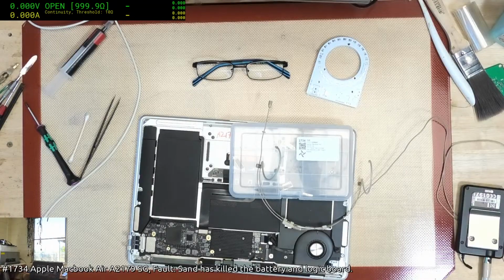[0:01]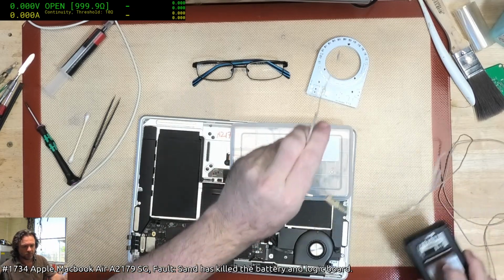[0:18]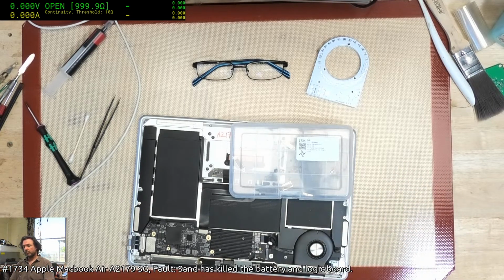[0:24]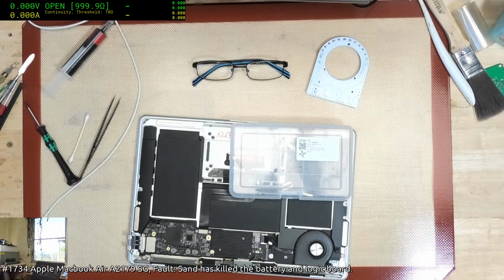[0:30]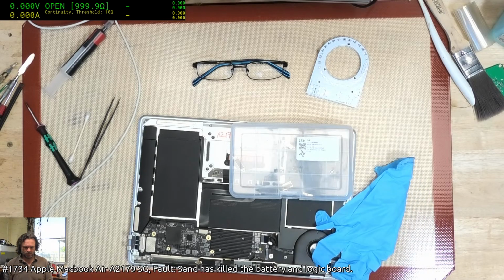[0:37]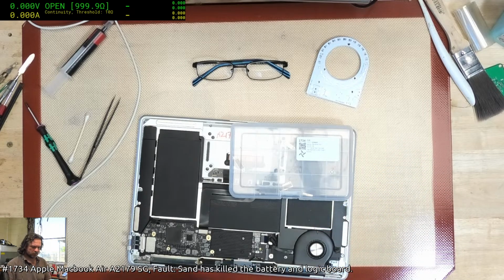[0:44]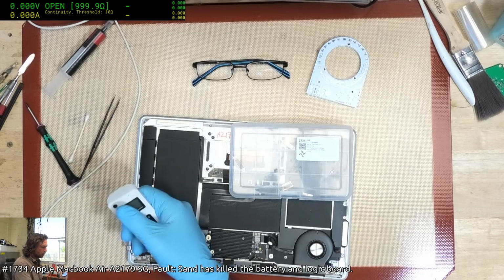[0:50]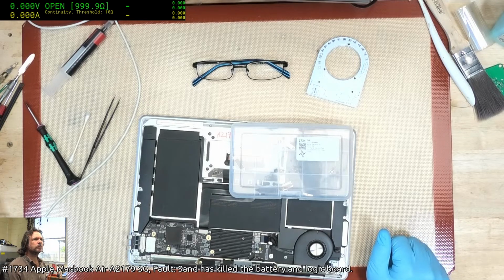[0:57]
gloves.
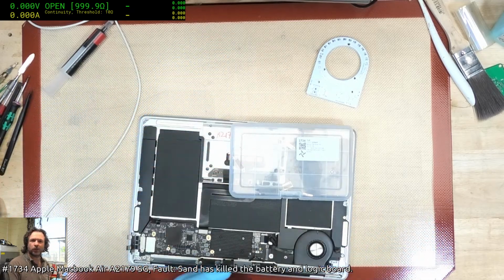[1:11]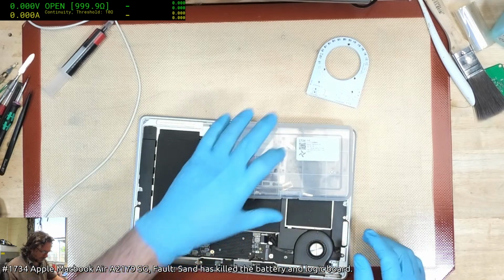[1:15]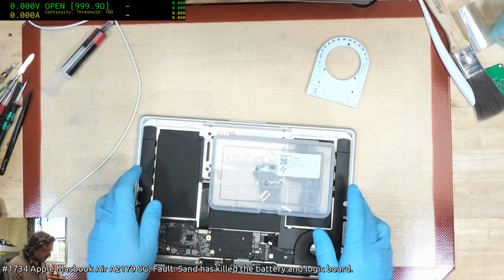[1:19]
Hey there, Christos and Thomas. Alright, let's get this underway since Mr. Rossman clearly has either got his time zones wrong or he doesn't know how to actually turn up on time. Hey Greg, James.
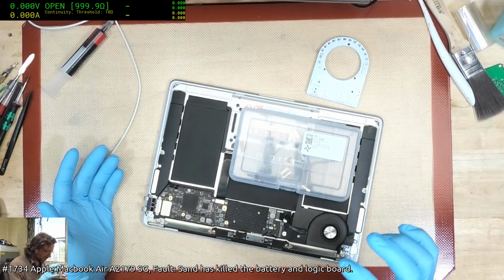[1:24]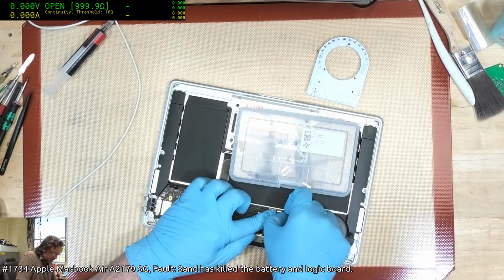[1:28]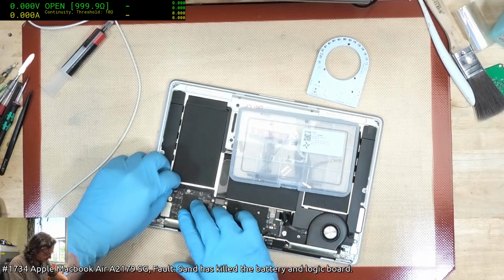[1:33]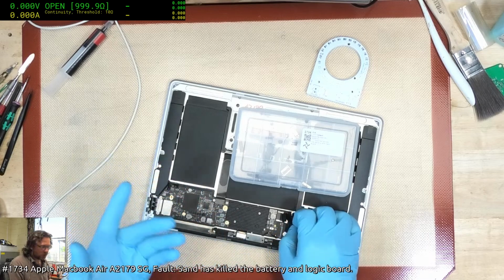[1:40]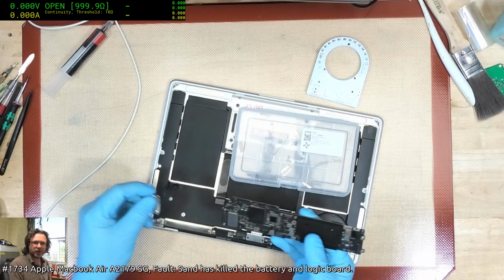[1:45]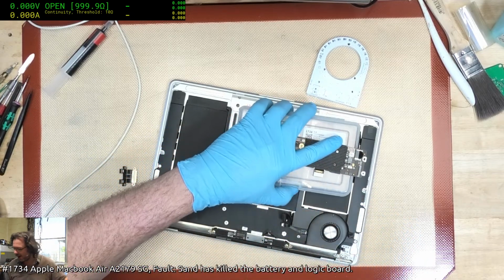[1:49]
By the way, I did fix up this 2179 from last night. I went to bed and I realized that 50-60 milliamps was possibly a DFU mode. And sure enough, it was in DFU mode, so I just revived it and it came good. Now you're probably thinking, why the hell didn't I think about that originally? It's because it's a 2179 and most of the time you get that sort of liquid damage on them and stuff like that. They're basically dead.
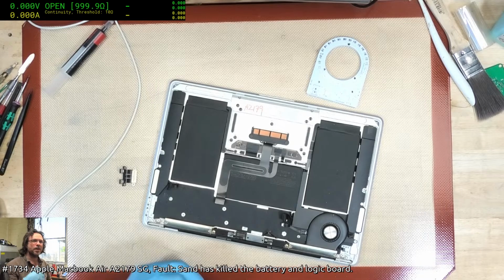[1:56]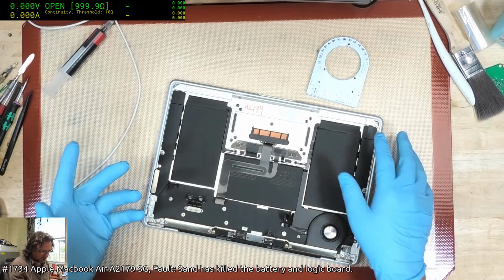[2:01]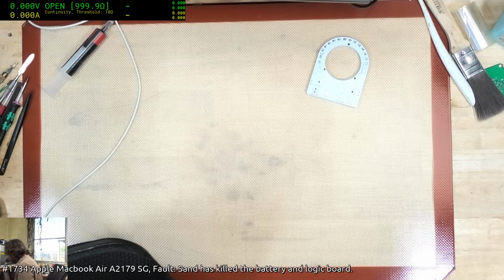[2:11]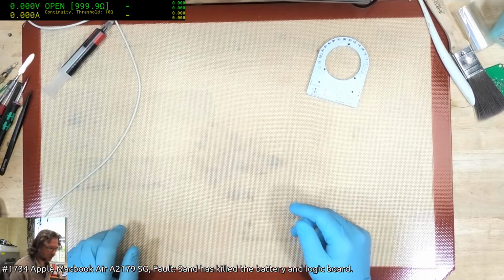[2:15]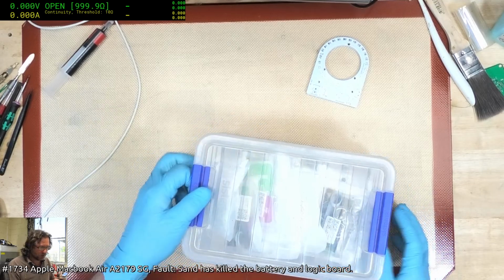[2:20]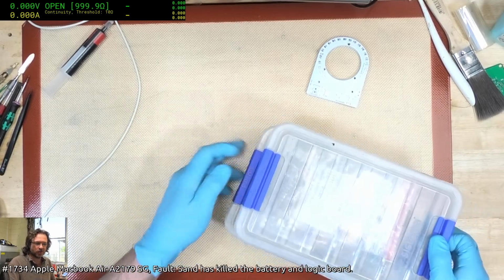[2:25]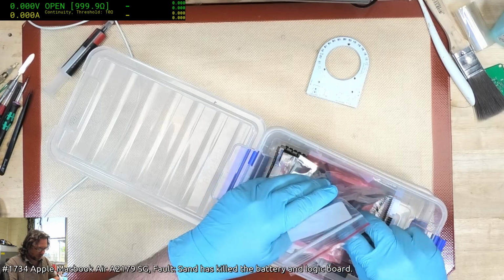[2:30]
So it was just simply due to the high likelihood of deadness that it didn't even occur to me to check the DFU mode. But that would have only worked after I had done the repairs anyway, so the repairs were a necessity, and obviously I suspect that they tried to DFU mode it prior to sending it to me, and that's why it was in that state. So that's why you try not to DFU mode things until it's kind of like your last resort, because it creates issues with the diagnosis and trying to repair.
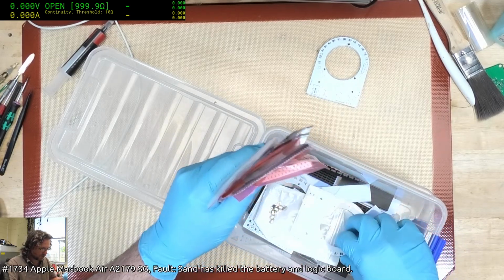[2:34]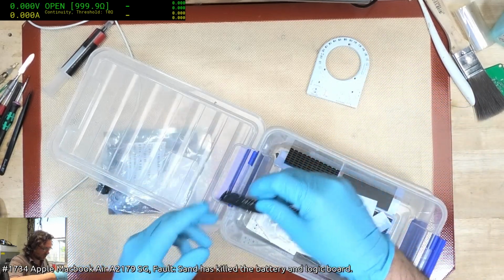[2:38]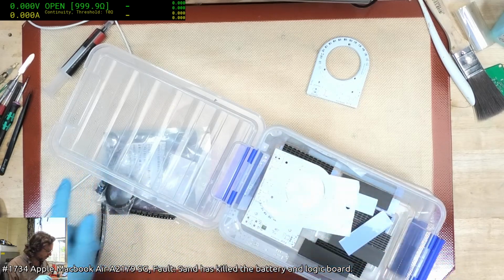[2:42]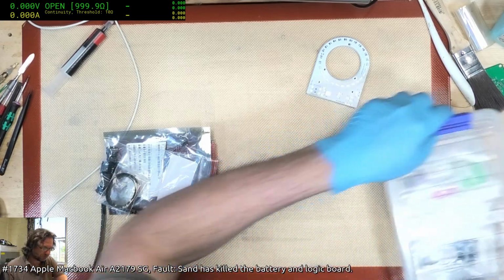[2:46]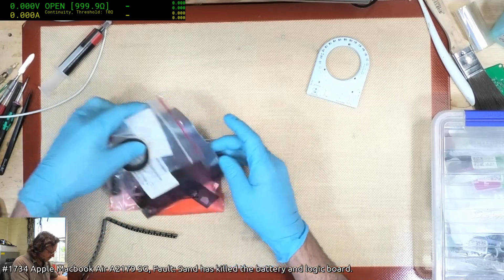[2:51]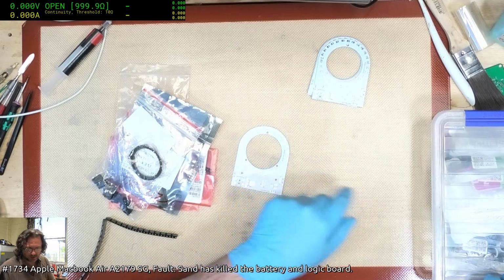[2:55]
Anyway, we have got ourselves a new set of boards, and we're going to make ourselves another ring light, because there are people who want them. And hopefully I can get this relatively well built. The main difference with this one compared to the other ones, let's see, where's the old one?
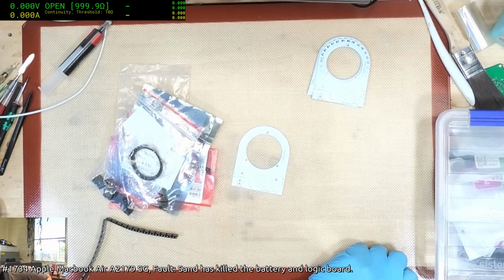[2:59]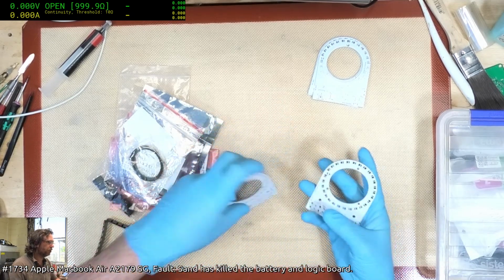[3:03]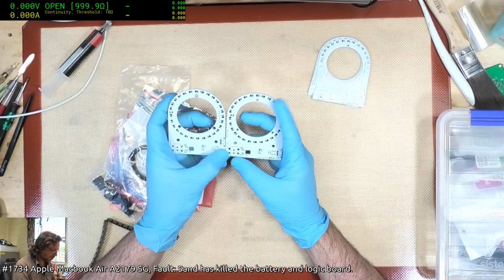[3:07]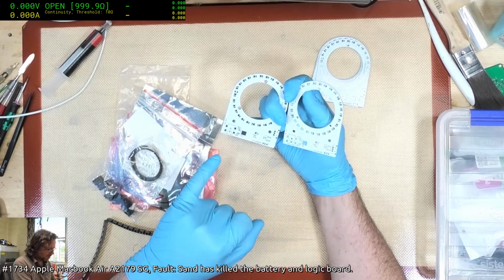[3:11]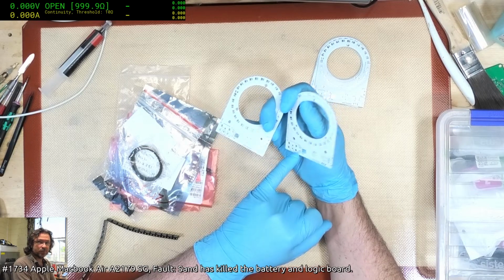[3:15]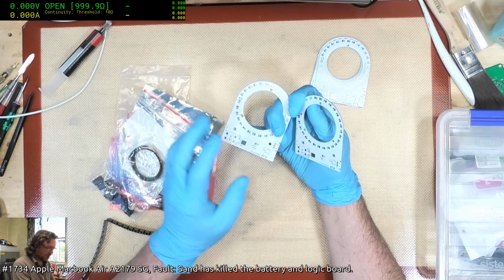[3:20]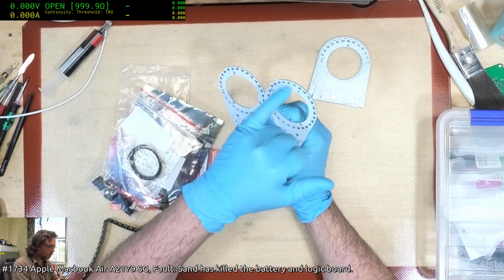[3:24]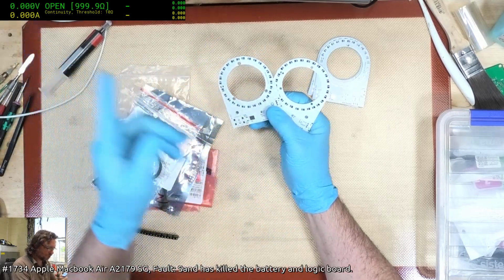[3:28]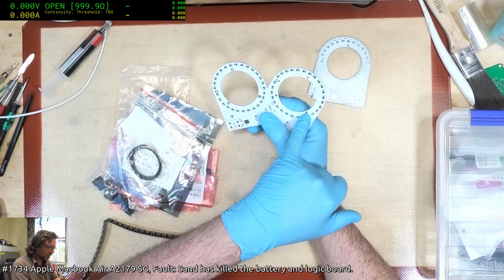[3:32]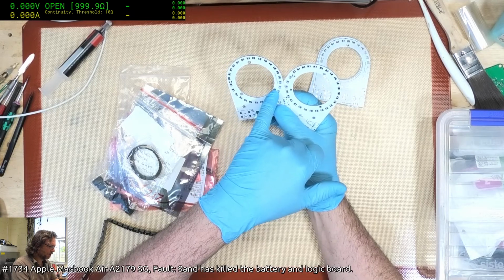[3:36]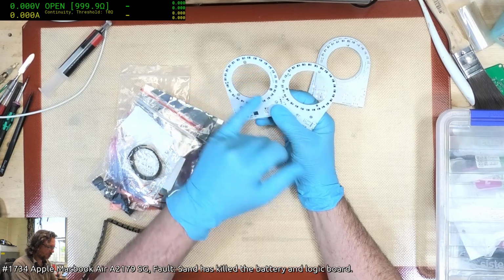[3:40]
Hey Rob, Diatom. Okay, the electrical difference between it is that the new ones, I don't have to have that bridge on the side of the DC jack to make it work. That's fixed up. On a physical side, the mounting holes for the collet or the ring or whatever that we're going to use to attach to the actual microscope itself, they're 2mm here, and I pushed them up to I think it's about 3 or 4mm diameter here, so I don't have a lot of room on the aluminium on the inside, but it's not really a problem.
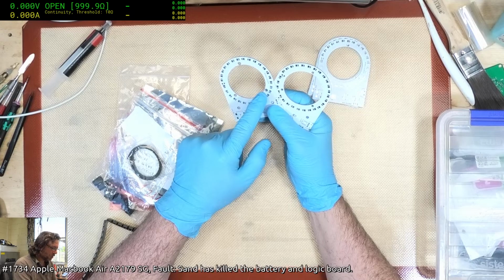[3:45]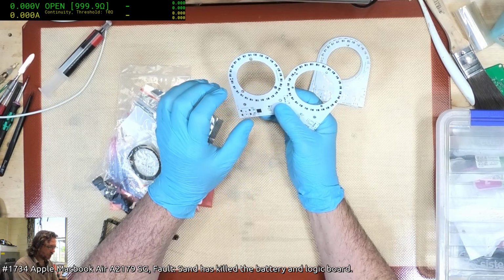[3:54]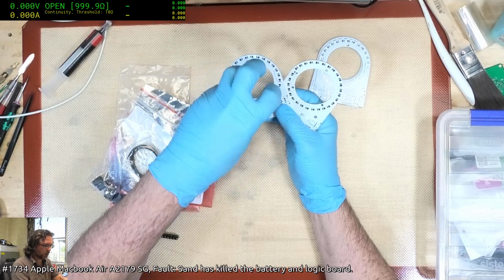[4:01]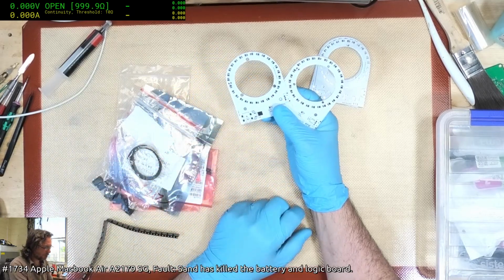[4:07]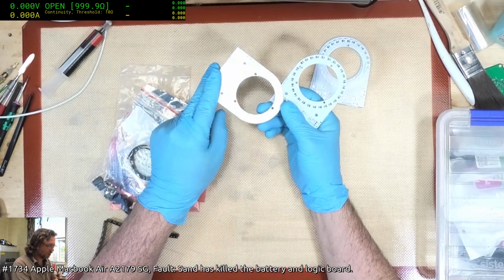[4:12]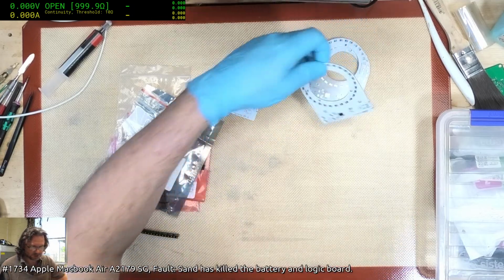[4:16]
I was almost considering to see if I can find some offset or cam screw heads, where the head of the screw is shaped like a cam, and then you can adjust how tight it presses against the microscope Barlow lens just by adjusting it. But it's probably going to be more drama than just getting a 3D printed thing to mount onto there. Anyway, we'll get it built and see how it goes. Ooh, better not mix those up.
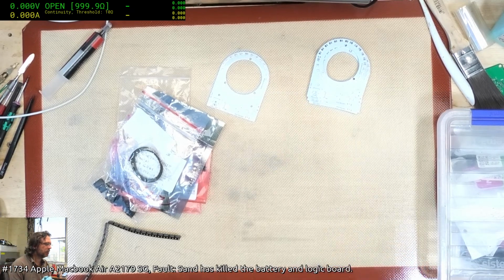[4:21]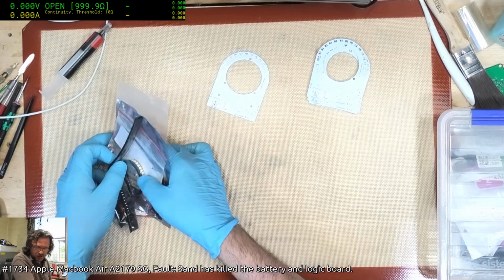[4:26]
Hey, Micromage. Let's see, did I get a...
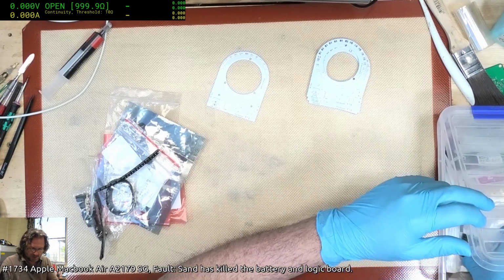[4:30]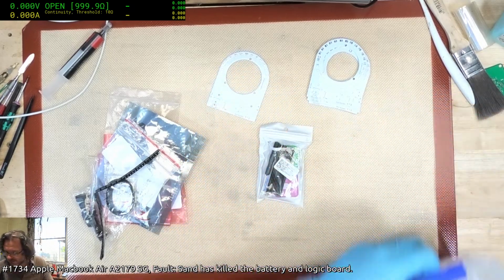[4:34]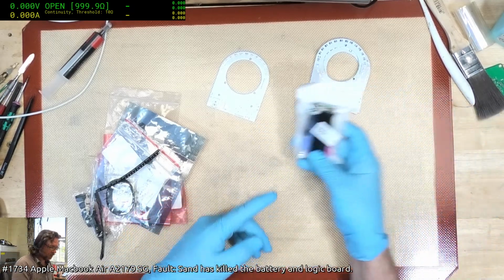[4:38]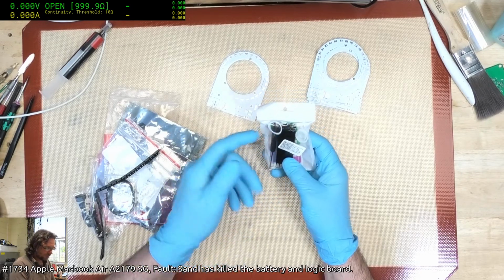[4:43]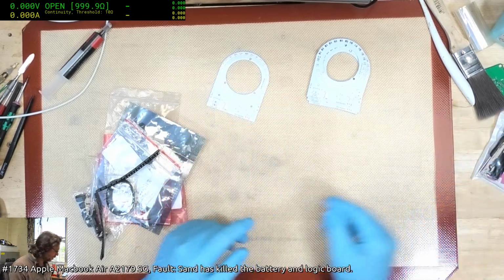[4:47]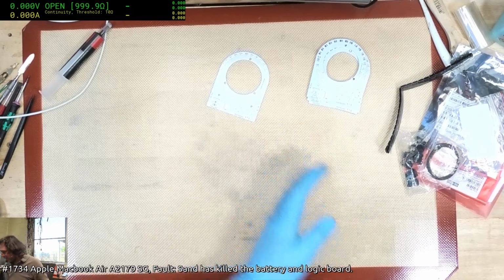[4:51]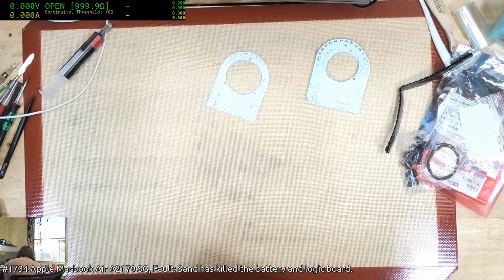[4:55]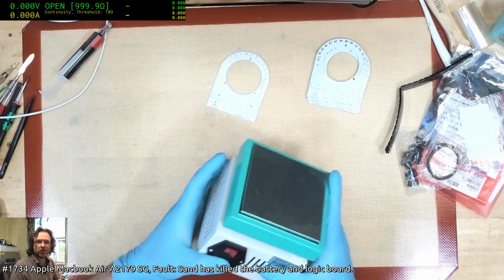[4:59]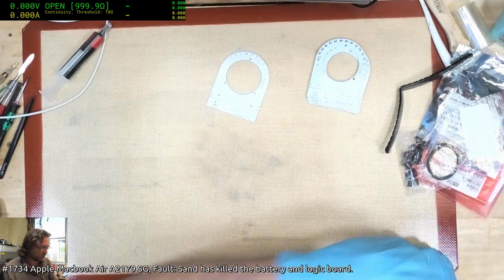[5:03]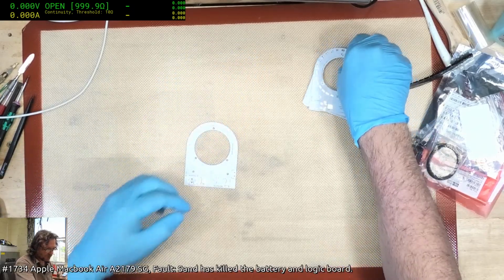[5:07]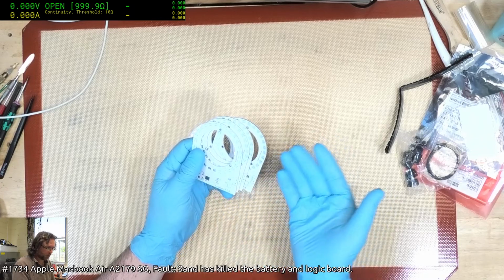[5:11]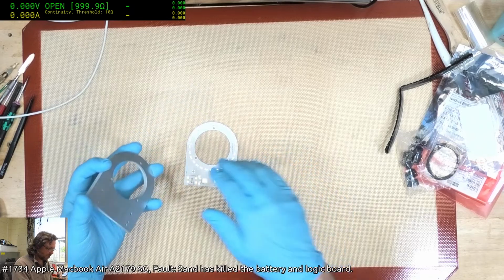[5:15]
And I've also got these bigger heat sinks that I'm using now. They're actually meant for NVMe drives, SSDs, but I've made the width pretty much the same as for the Microscope Light. They work pretty well. Now obviously for this we are going to use a reflow, a very dodgy reflow, but we're going to do it anyway, and then after the reflow we spend just as much time reworking it. That's the only trouble when you do a dodgy reflow system, you've got to do a lot of rework. So let's get to it. I've only got 5 of these. Obviously when I'm prototyping I only buy the minimum number of boards, and then if the prototype proves itself, then you go and buy the couple of hundred.
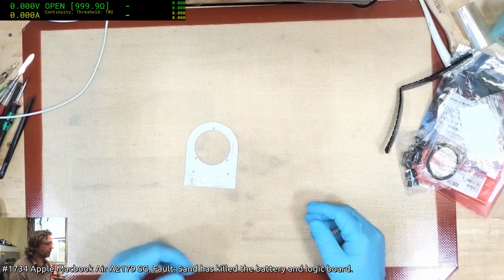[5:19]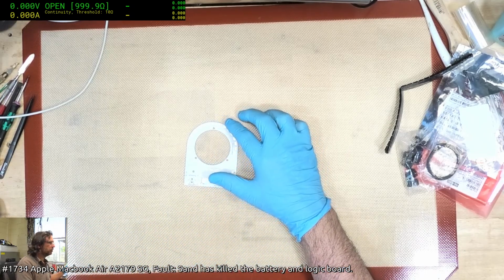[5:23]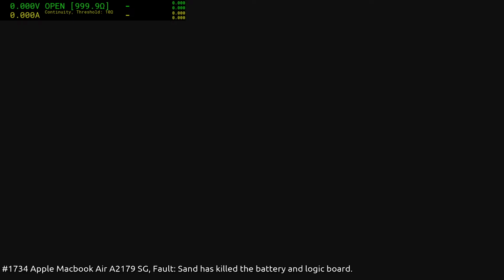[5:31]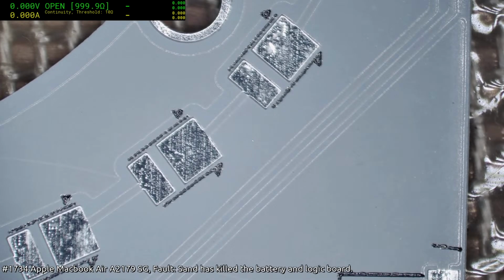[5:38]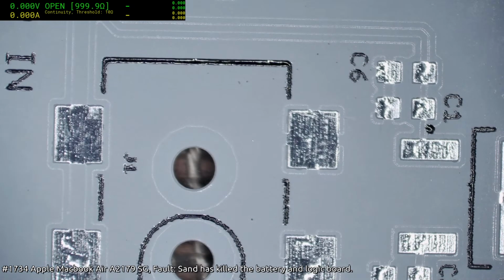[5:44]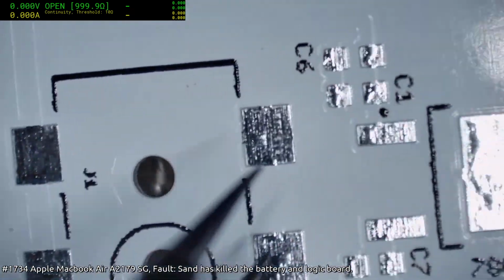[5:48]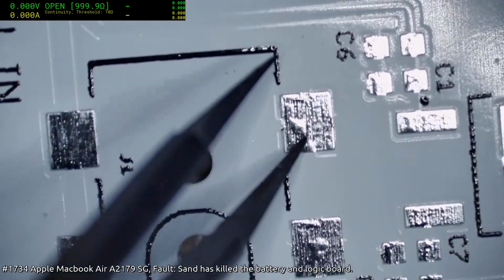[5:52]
Could help if the microscope camera was on. There we go. Alright. So yeah, you can see now that it's probably actually quite hard to see, but you can see the thermals connecting on the edges there, going on both of them.
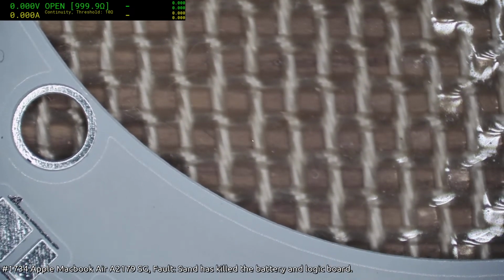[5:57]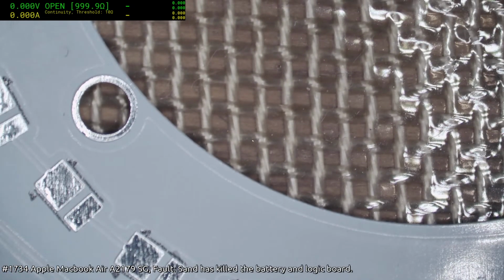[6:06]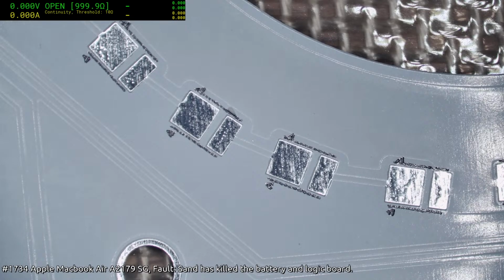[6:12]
Right, so this is going to be a right royal mess because I haven't really invested in a proper applicator. I was considering getting a stencil for this round, but I thought if I do that, I'm sort of cursing myself to make a mistake, and then I'll have to do another board. I mean, I'm starting to get to the point where I'm a little bit sick of getting boards done, as you can well imagine. Okay, I just need to clean out the nozzle. Where's my nozzle cleaner?
So has Lewis's stream actually started yet, or is he just stuffing around still?
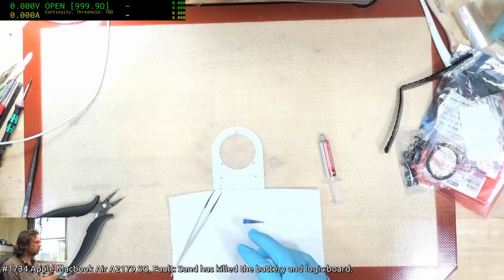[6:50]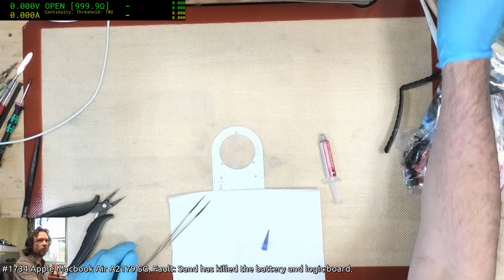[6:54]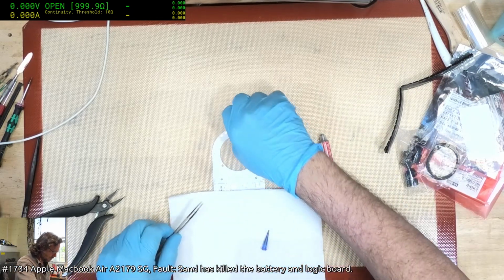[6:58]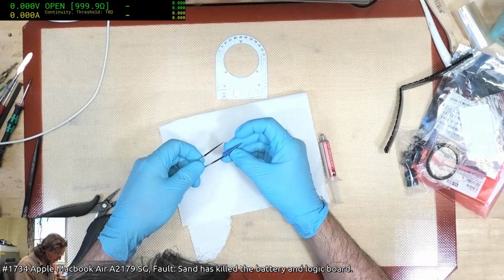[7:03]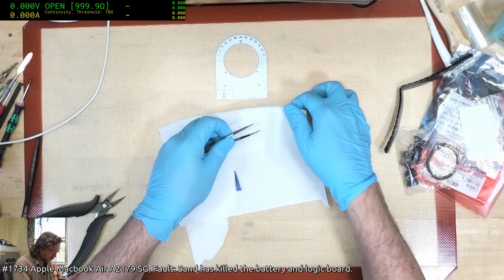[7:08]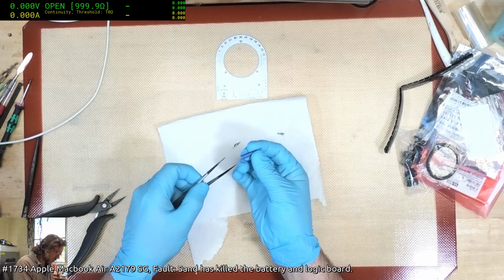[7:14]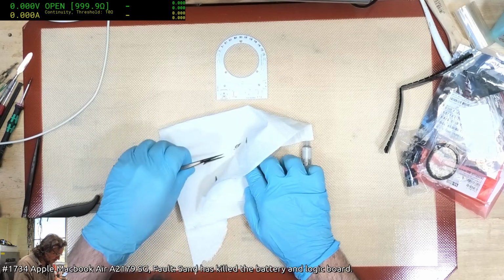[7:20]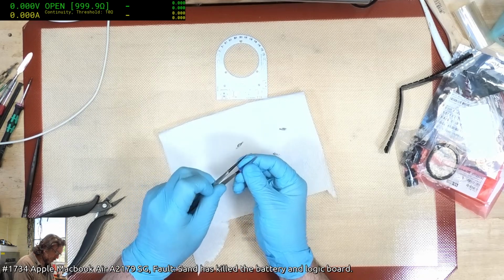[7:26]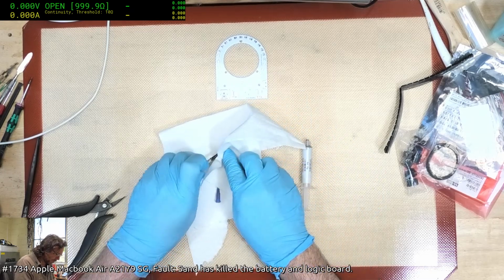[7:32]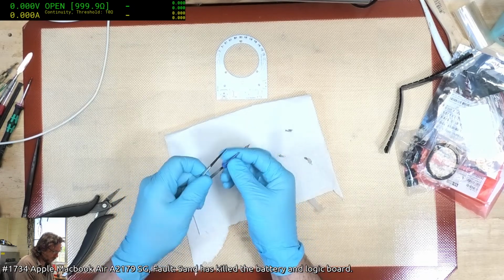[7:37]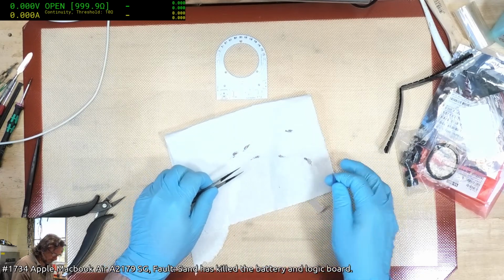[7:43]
Yeah, Micromage, it could be that your light could be brighter than mine. The main thing I want with mine is that it doesn't get in the way of my hot air so much. And of course it's got a high color rendering index. But the actual brightness, I suppose it's subjective, but it's probably not really that much brighter than most of them. But I do much prefer having the superior color rendering and the lack of obstruction getting in my way when I'm trying to move the hot air wand over. Hey there, OT. Hey Paul Glick. Yeah.
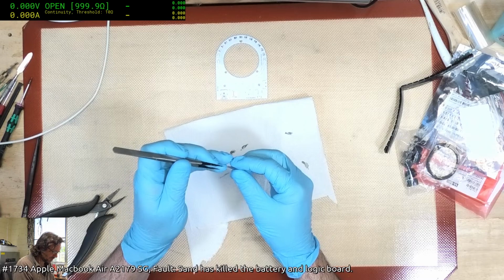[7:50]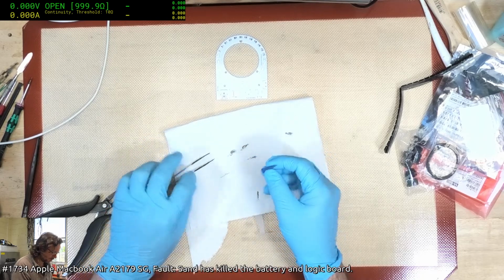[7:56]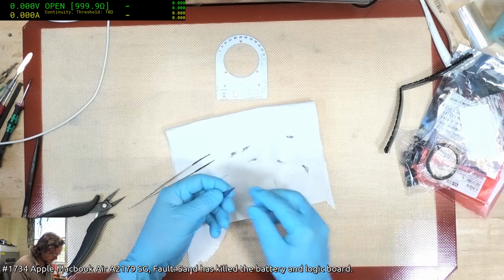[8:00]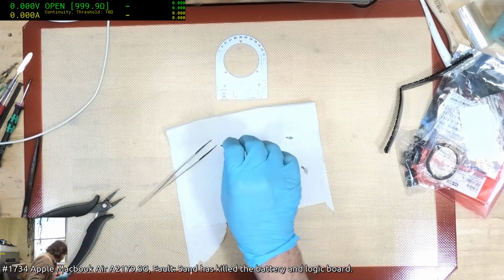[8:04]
I really should just buy myself a couple of hundred of these little things rather than reusing them. It's almost cleared through. Just a little bit more work.
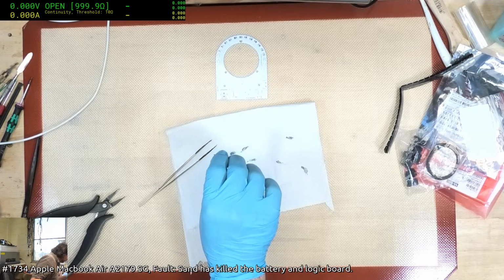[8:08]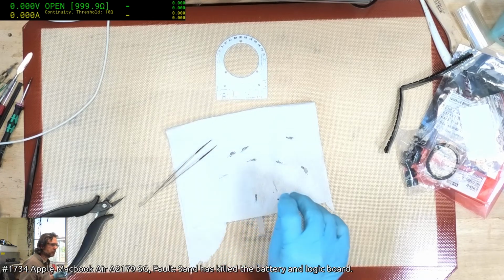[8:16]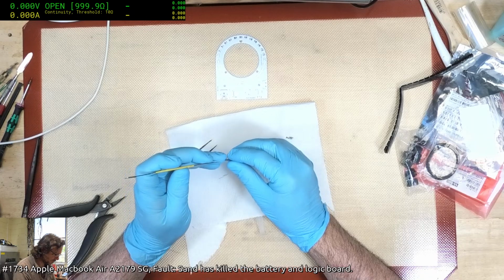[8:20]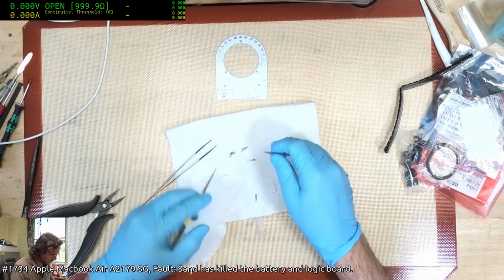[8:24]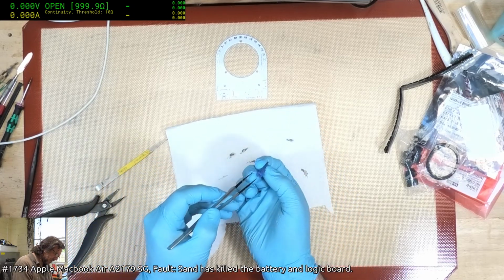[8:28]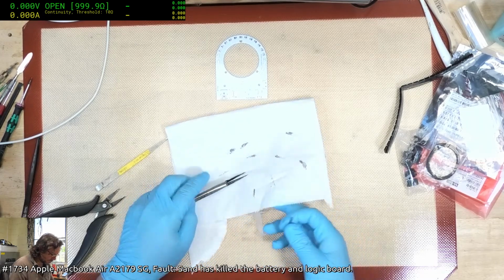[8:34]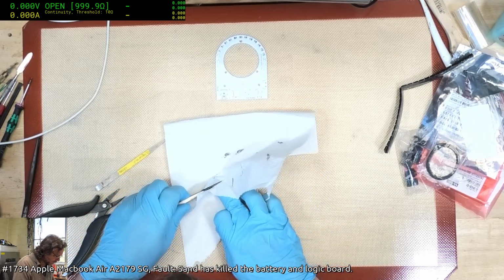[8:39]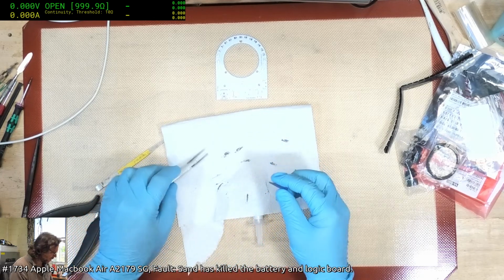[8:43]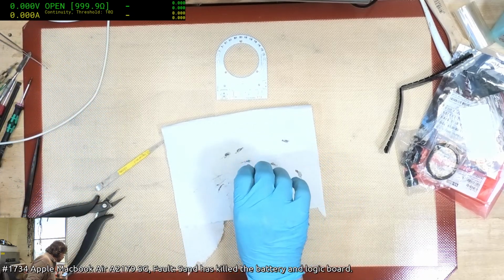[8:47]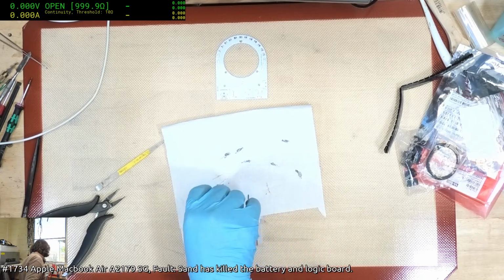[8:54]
Yeah, the glare can be a bit of a problem. It's hard to define what's causing the glare, and I find sometimes if I've got a lot of flux or any sort of reflective stuff on the board, it can appear glary, and the only real way you can solve that is to have even more light and then bring in the polarizer. I'm not sure how a polarizer would go because my LED lights are rotated in different ways, so it may actually be more of a problem than not.
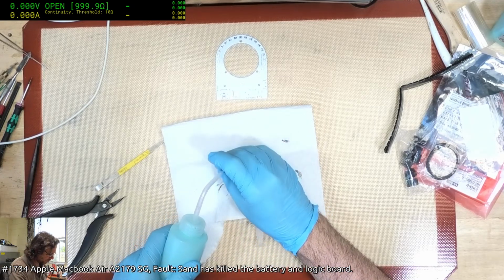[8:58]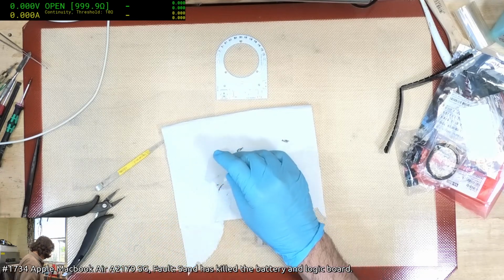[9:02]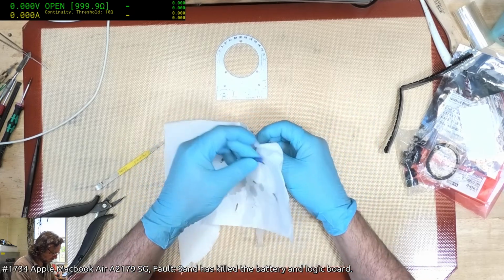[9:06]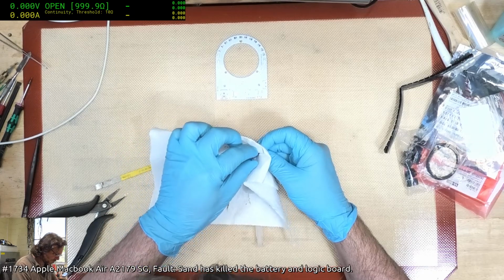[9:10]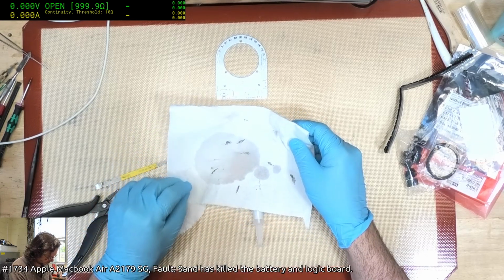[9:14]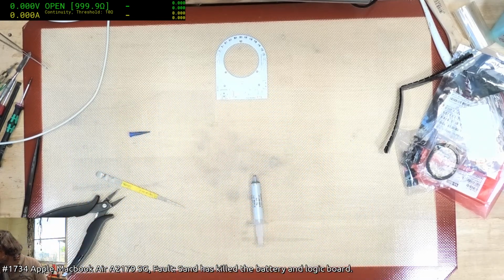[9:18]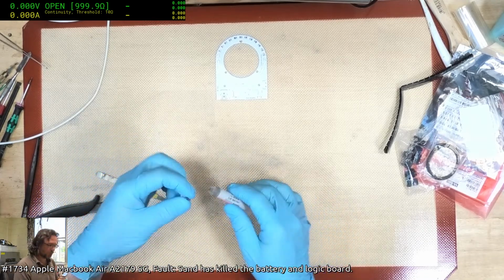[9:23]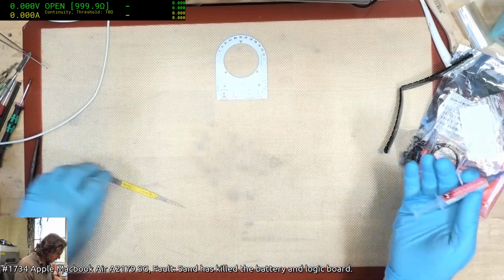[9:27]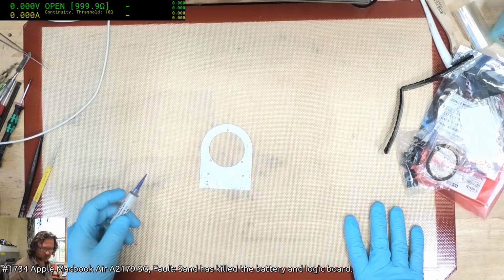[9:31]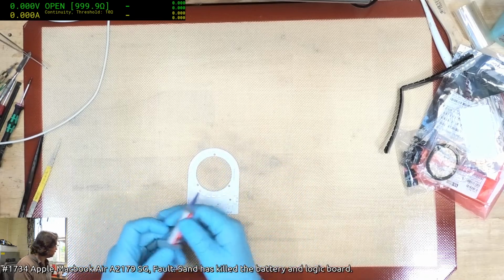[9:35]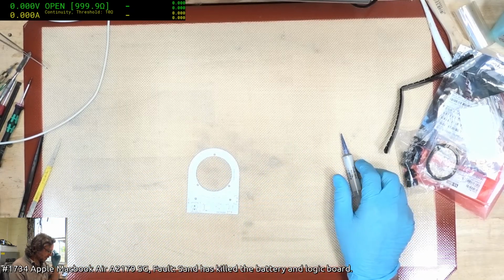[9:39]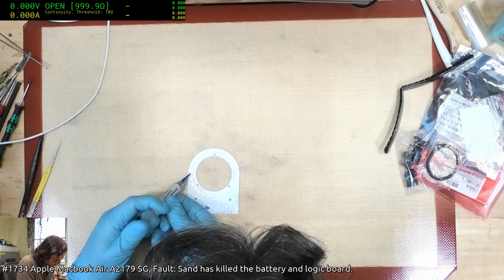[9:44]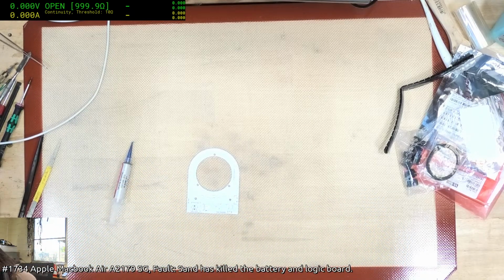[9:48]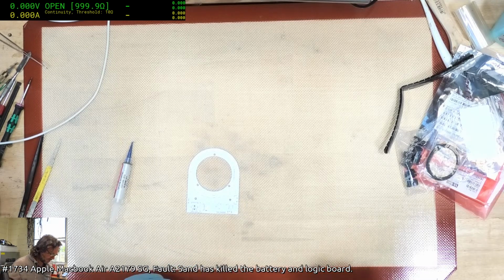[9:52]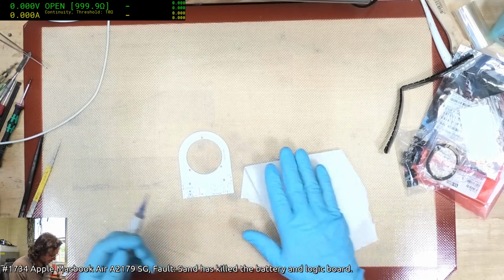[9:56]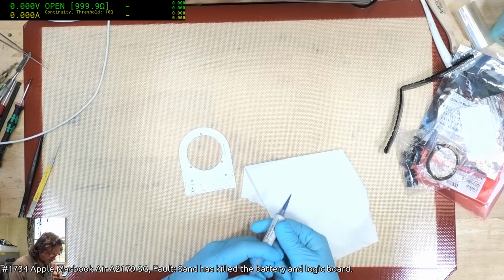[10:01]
Hey Mark Guzman. Alright, this is probably going to have to do. I promise if I start doing these at home I will get a proper stencil. I could cut one myself. I've got the mylar. I usually have done plastic or mylar stencils myself because I've got a cutting machine for them, but it's a bit of a commitment. And I'm not sure how well my mylar cutting system would do; it definitely will not do the controller chip. It will do 603s, that's no problem, but below that it becomes a bit unpredictable.
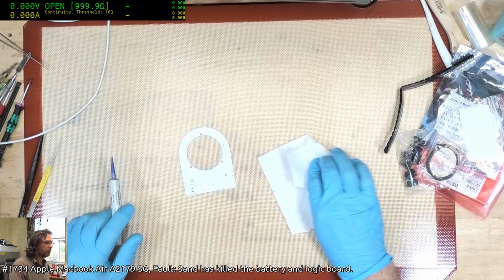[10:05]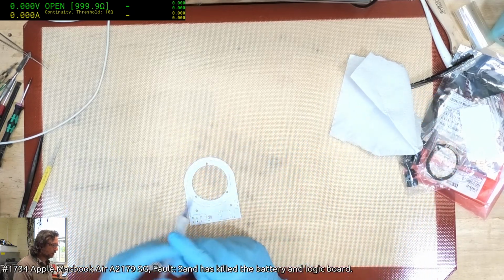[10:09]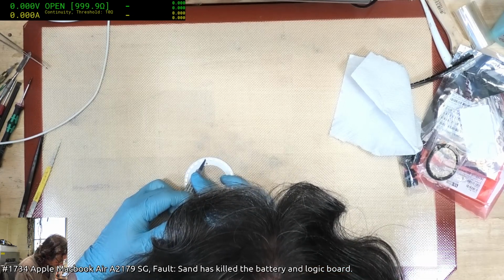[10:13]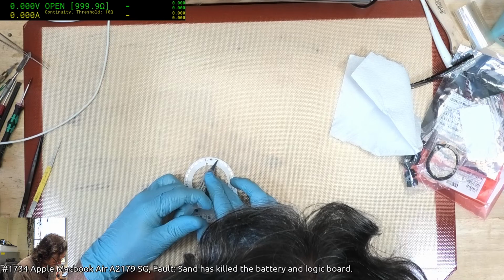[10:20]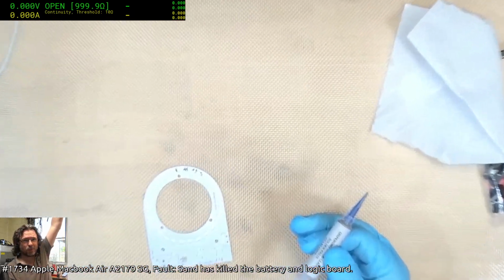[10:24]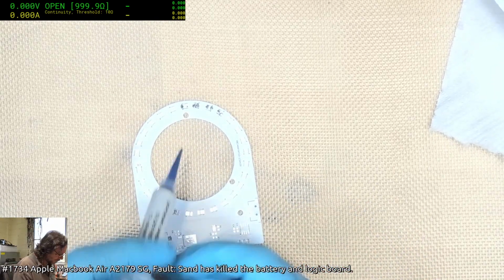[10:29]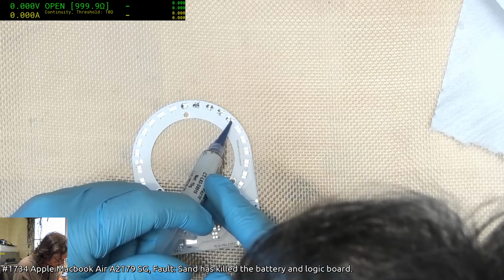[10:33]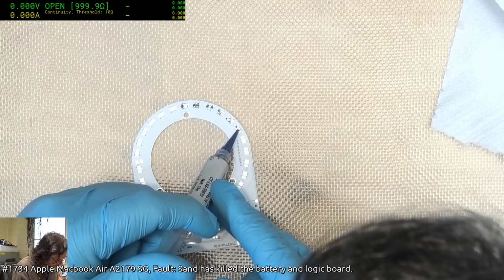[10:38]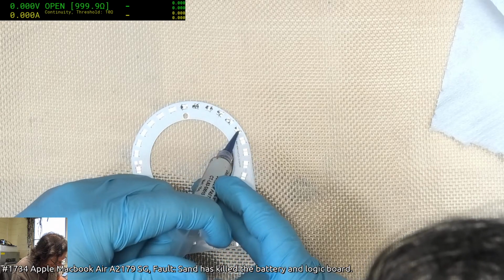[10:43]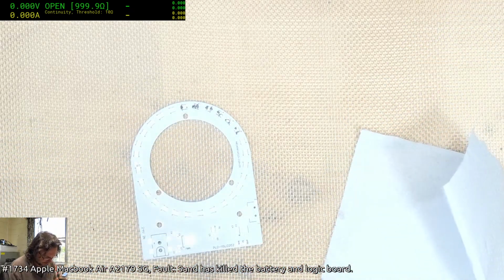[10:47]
Already this is annoying me. Might zoom in so you get a better view of how bad things are. Yeah, I realise it's a little bit overblown. I can't do much about that at the moment. This is a really poor way of doing this stuff, by the way. Now I've got a blockage. Fantastic.
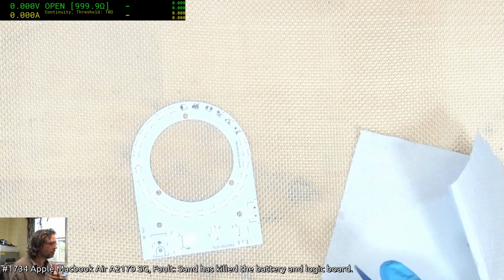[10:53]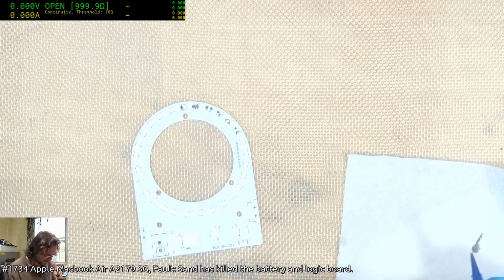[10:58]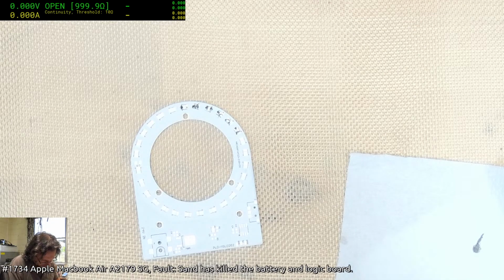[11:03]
Hey, Shard.
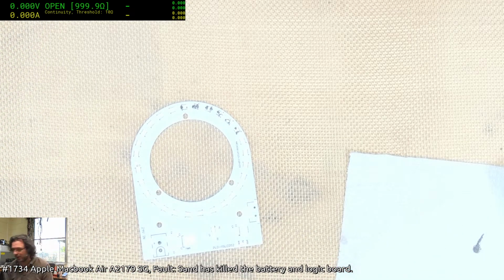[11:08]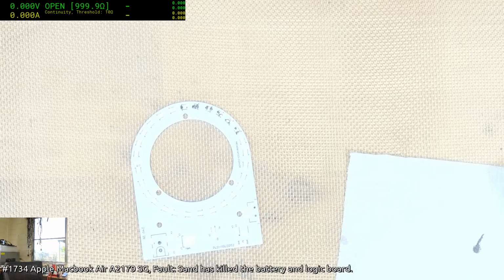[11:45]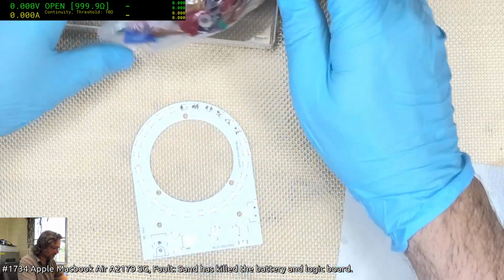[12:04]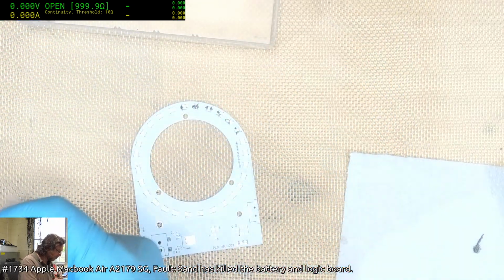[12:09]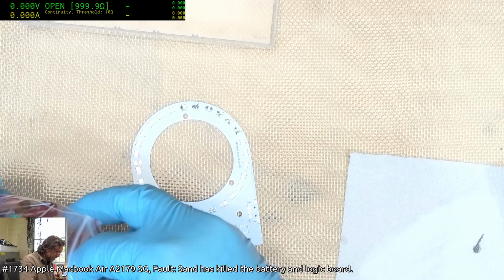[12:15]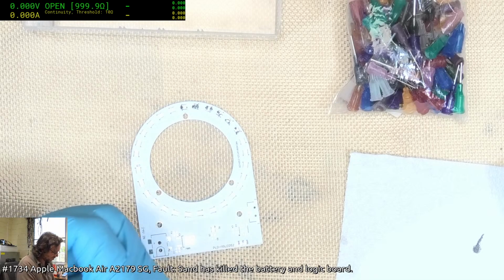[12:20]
That's a full-on, hard blockage. Let's see if I've got another tube. I'm most certain I do, I've just got to find it. Or at least just another nozzle. Now I wonder if my old needle nozzles will actually work. I'm just not sure they're the same screw system. It is lead-tin one, yeah. I'm fairly sure these won't fit, but we'll see. Then again, maybe they will. Oh, there we go.
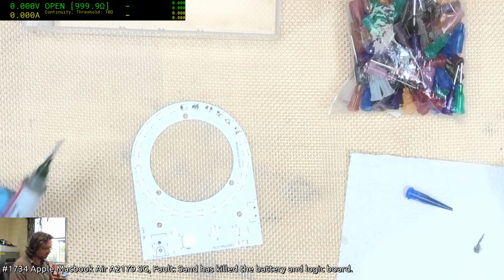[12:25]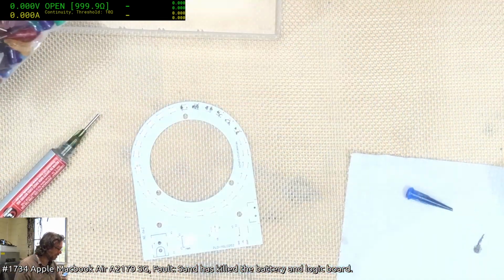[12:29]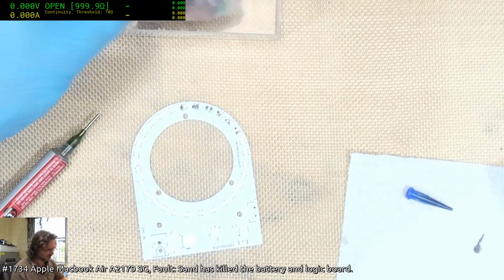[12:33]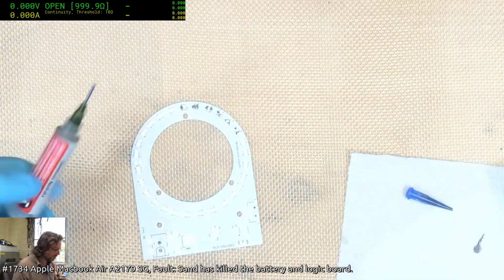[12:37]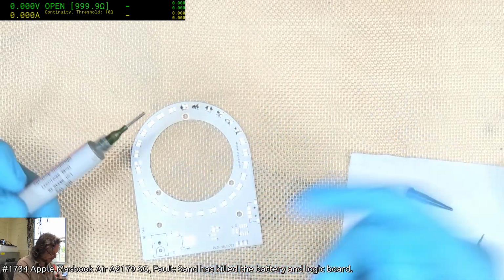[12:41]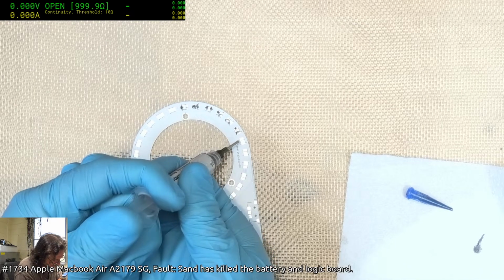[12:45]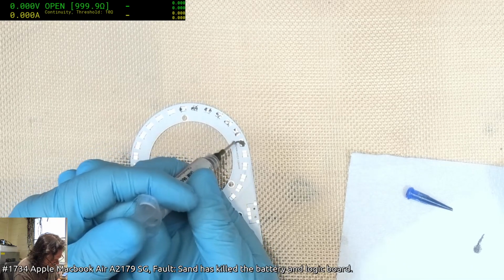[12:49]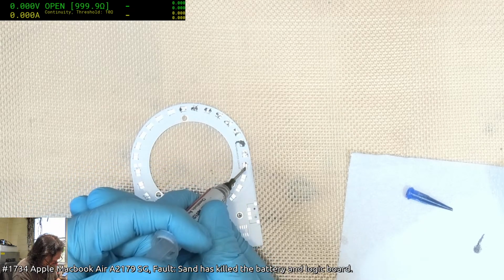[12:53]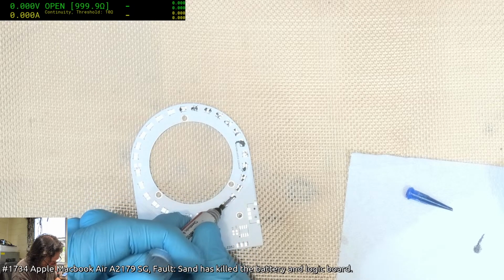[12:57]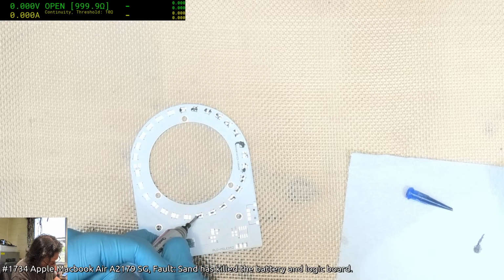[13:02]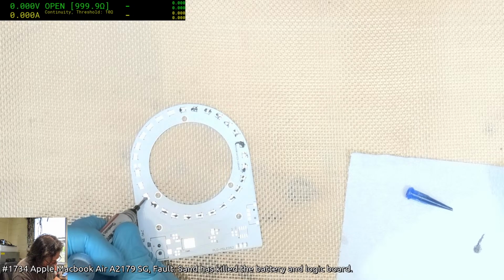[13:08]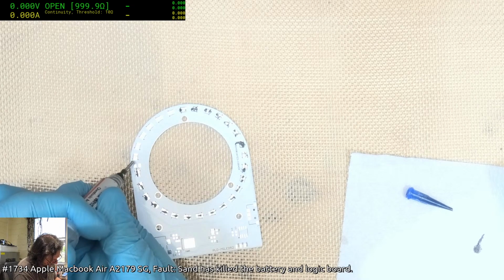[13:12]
Easy pie. Okay, that bag is probably, it's got to be about 15 years old now. I bought these back when I was doing this sort of work normally. Now I've got too much. Okay, learning process. Okay, come on. Too much. Getting there. Kind of easy if I just streak it across, like you're a dog that hasn't got a good diet and you're just trying to clean up afterwards. Do the old drag across the ground.
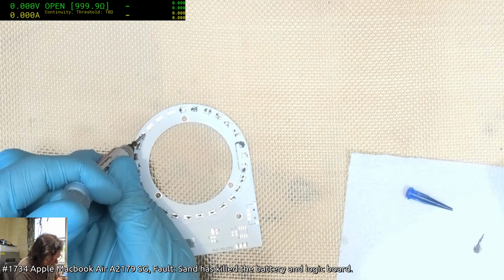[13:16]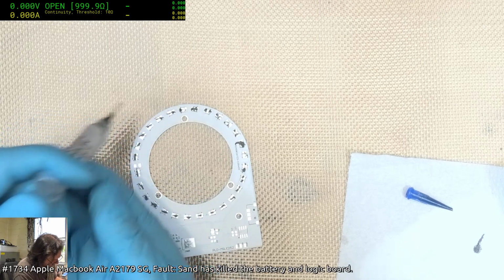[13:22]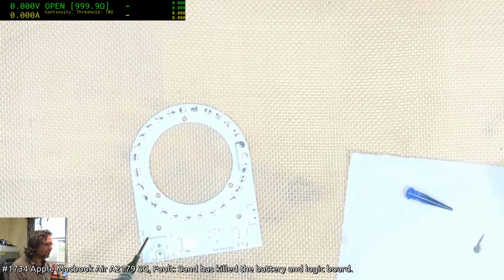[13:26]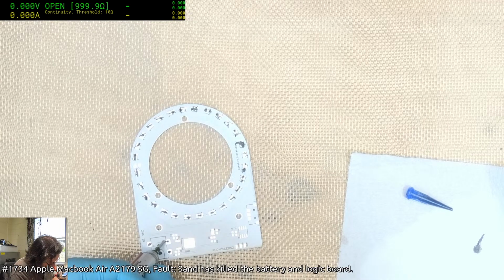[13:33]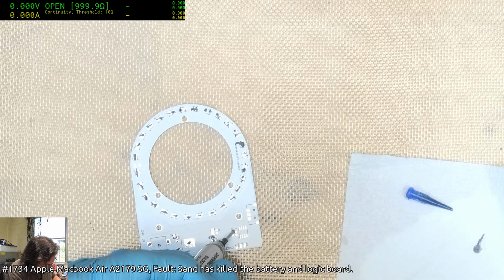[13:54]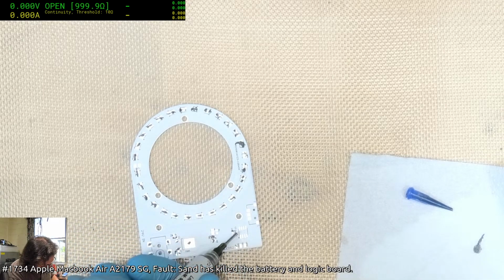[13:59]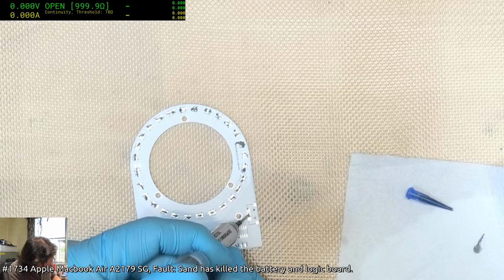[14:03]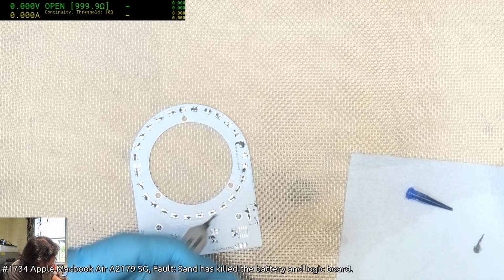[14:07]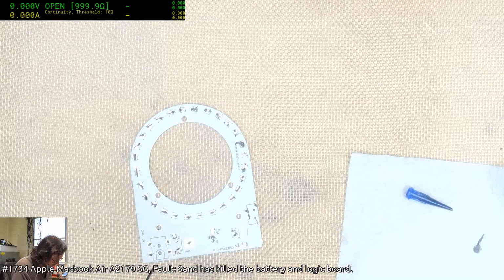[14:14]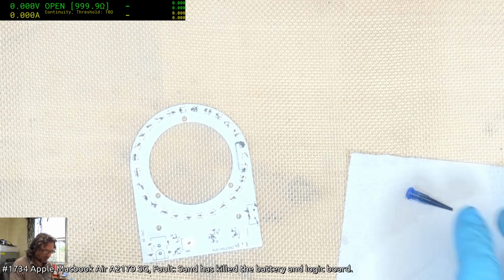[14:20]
Oh God, give me a stencil or give me death. Yeah, just don't drag it across the carpet. Oh my goodness, we need a new carpet. See, the trouble is the circuit board itself, there isn't really a lot of stickiness on the pads. Oh, whoops, that doesn't need soldering. And I can just smear it around. The joy of surface tension will fix everything. Yeah, this is traumatizing. For me, not for you. Okay, that's a sufficiently ugly mess.
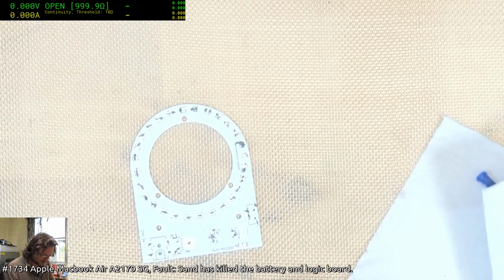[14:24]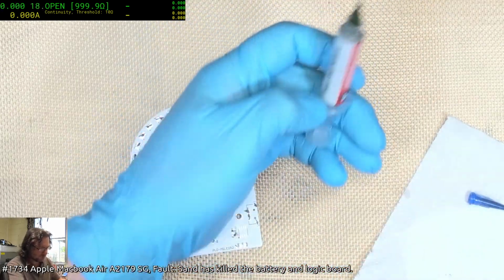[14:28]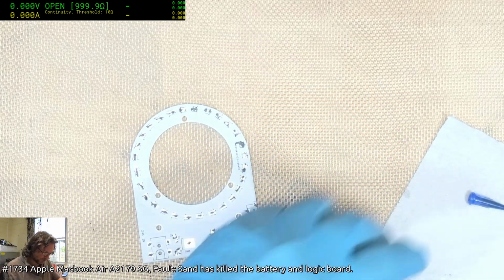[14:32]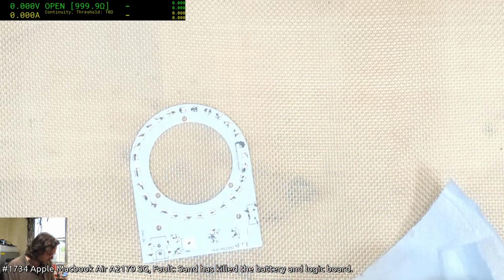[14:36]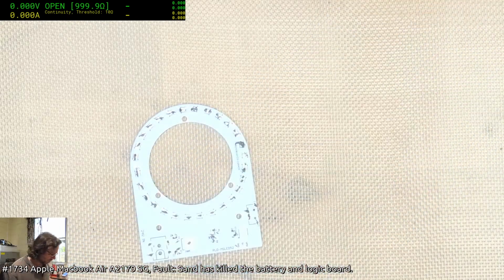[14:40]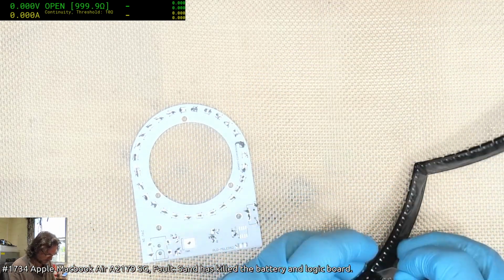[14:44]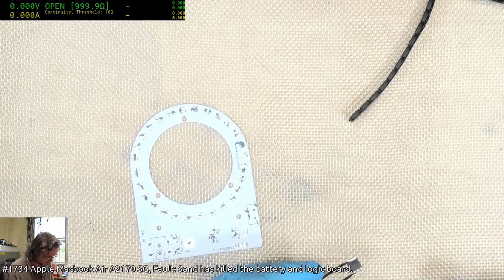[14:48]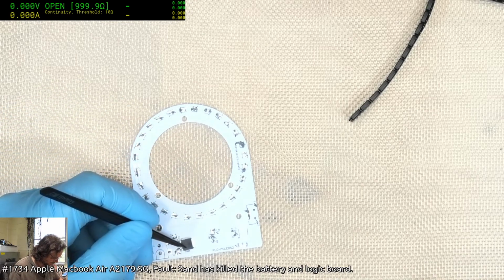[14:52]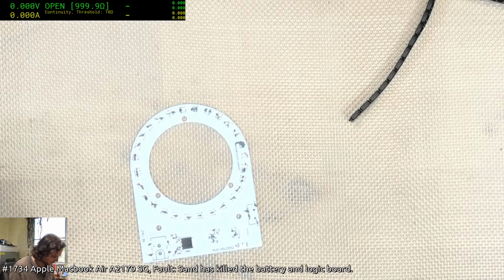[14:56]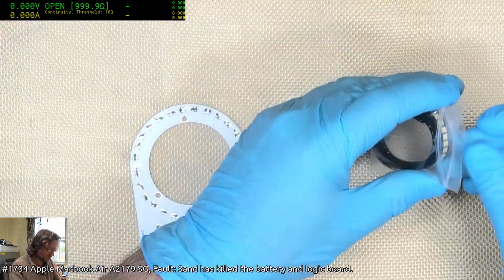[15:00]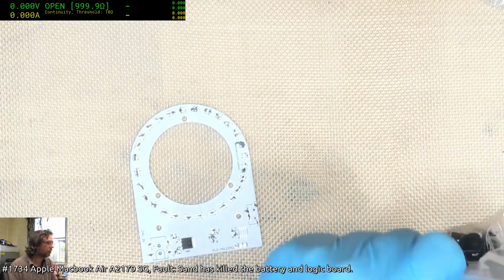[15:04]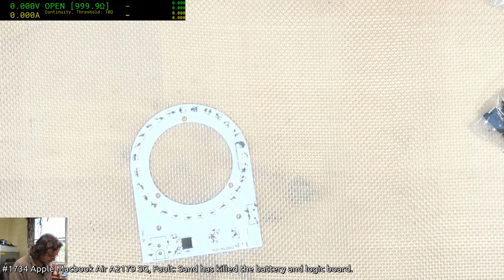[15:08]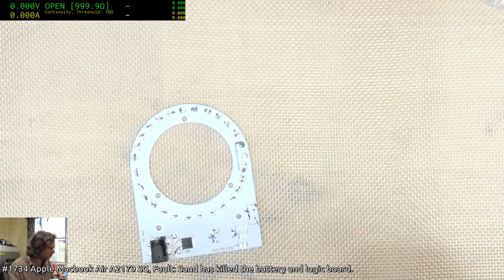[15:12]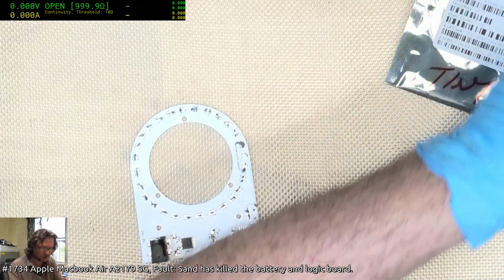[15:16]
This is why previously I would just go along and use a soldering iron and dab down what I needed. Yeah, Paul, real smart. Go for the big parts first, because the big parts are always the best thing to put down first. It just makes you feel like you're achieving more by putting down the larger things first.
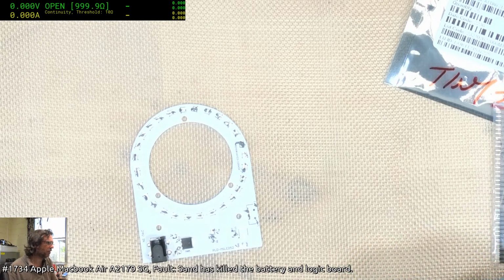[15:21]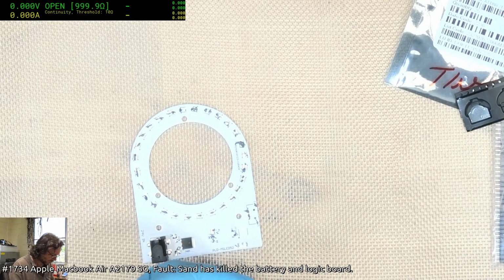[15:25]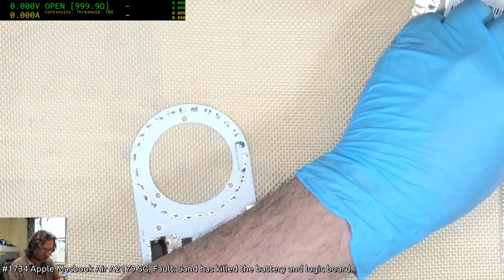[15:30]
Microscope ring lights having loose threads and falling off easy. Wow, I don't even know which ring light you're referring to with the microscope. Mine was just held on by the collet sort of thing.
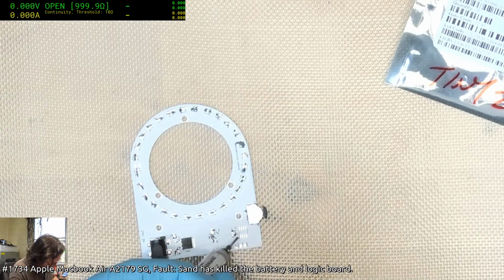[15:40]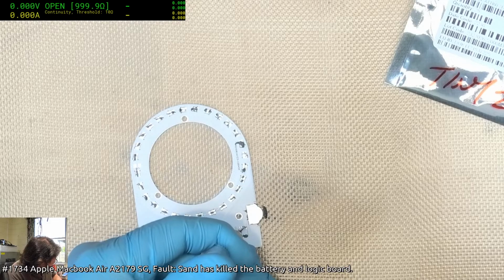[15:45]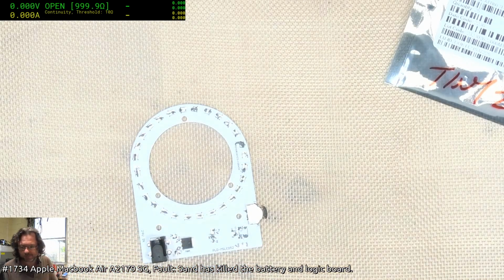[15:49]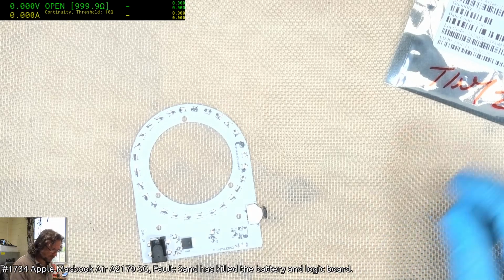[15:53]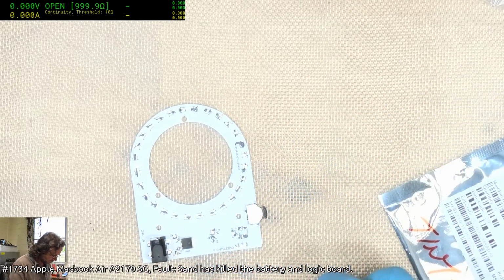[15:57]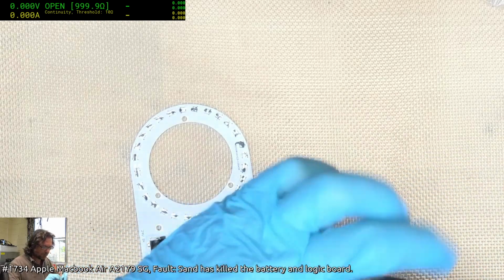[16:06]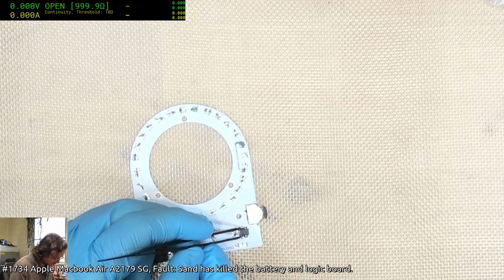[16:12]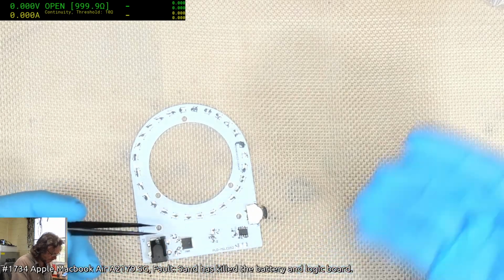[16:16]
I completely forgot to do the controller. Tiny 212. It needs pads with lead solder. Yep, big fat mess. Like I said, thank goodness for surface tension. And we'll definitely have to rework this afterwards. It's inevitable. But if you get your stenciling right and you get your reflow oven right, then the amount of rework you have to do is pretty minimal when you actually put things into production.
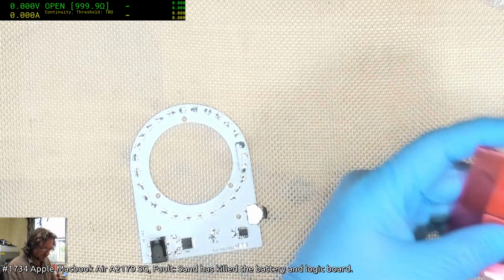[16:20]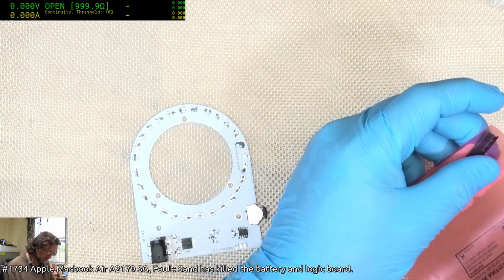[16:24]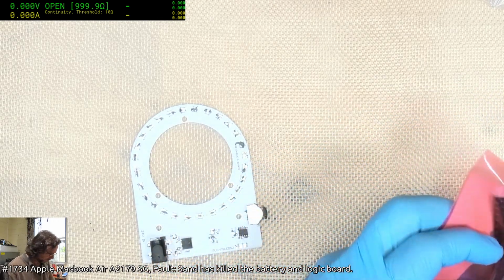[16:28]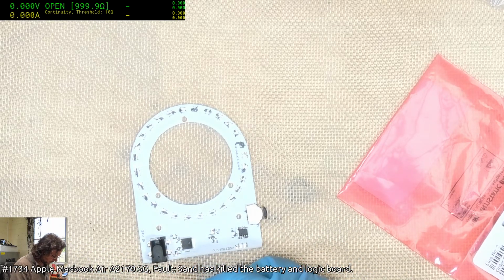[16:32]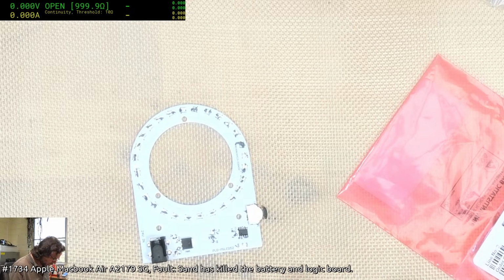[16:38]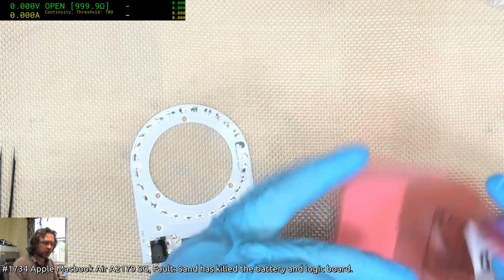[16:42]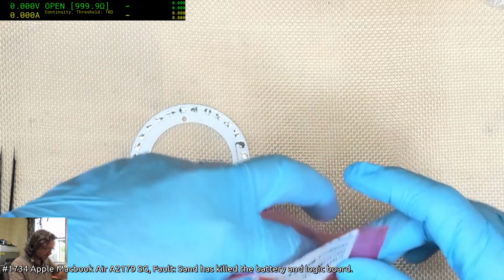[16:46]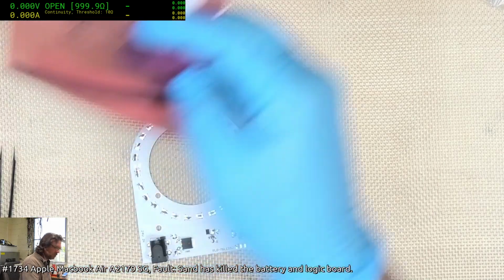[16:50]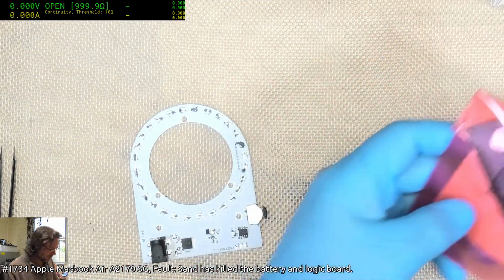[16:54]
It tends to come down then to just how good the weather is on the day and whether you're any good with your stenciling or not. You've got to be careful you don't have an inconsistent thickness. It doesn't matter too much with most of these parts, but definitely with this controller, the LED controller, that's where it's going to be problematic or not.
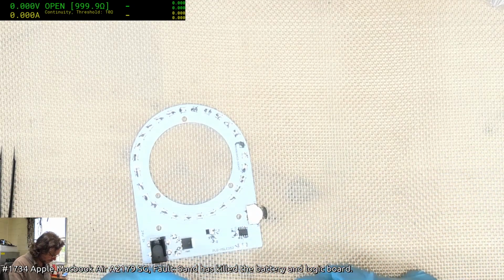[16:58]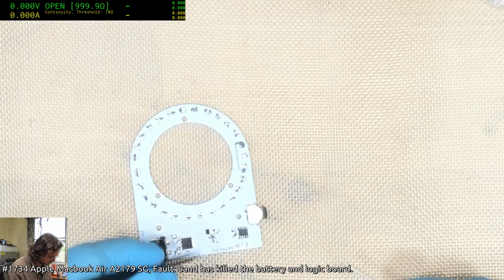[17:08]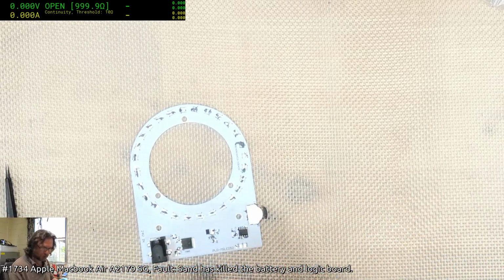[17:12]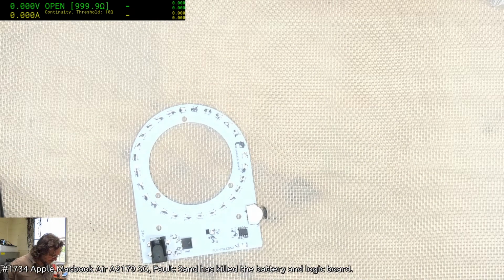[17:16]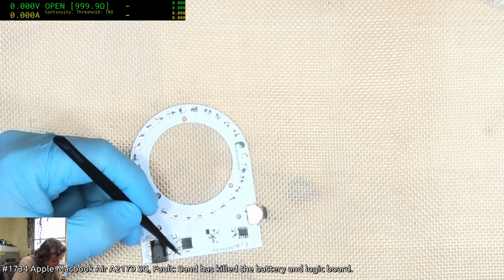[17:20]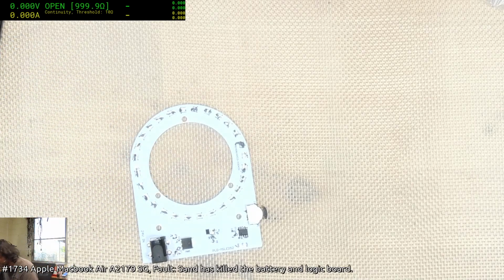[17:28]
Kind of surprised I'm doing this free vision, as in, I'm not involving any microscope yet. Alright, now I've got to remember what the rest of the bits and pieces are. Let's see, I've probably just got a 1 microfarad, 100 nanofarad type pairing either side of that, because that's standard.
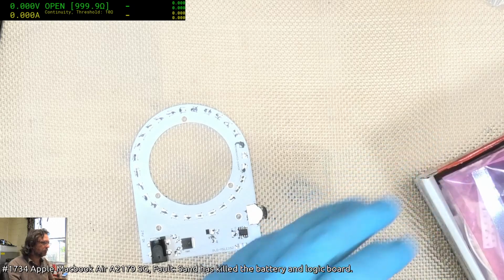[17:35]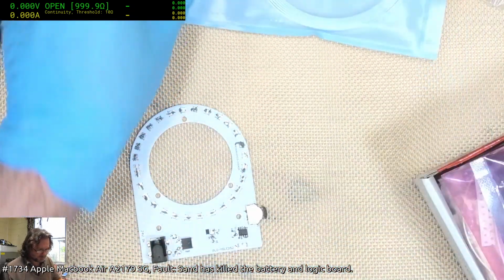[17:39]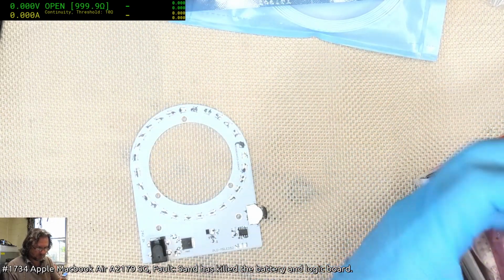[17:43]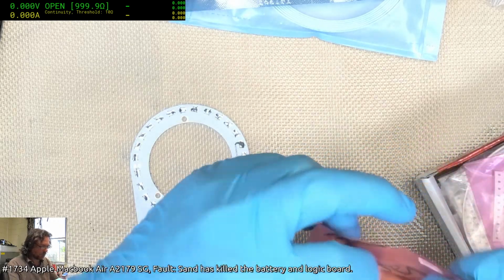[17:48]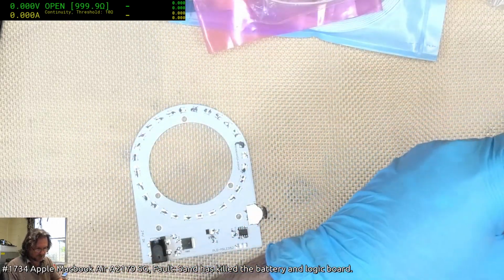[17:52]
Hey Eric, waking up from a coma, eh? Sounds interesting. 10 microfarads all over the top. Someone's ruptured a bag. 163. Okay, these ones are the ones I need. Getting there, Eric, getting there.
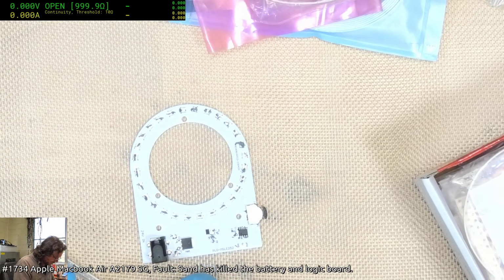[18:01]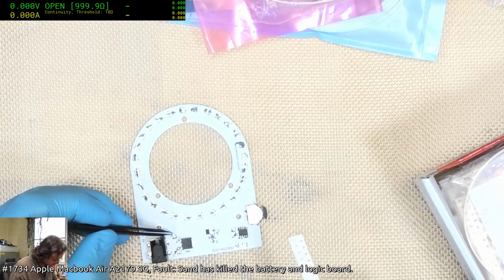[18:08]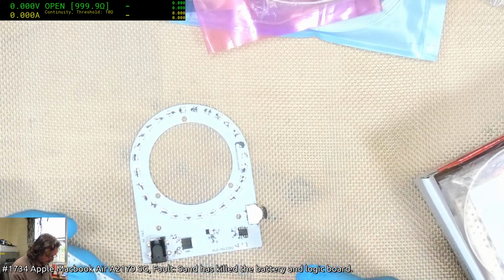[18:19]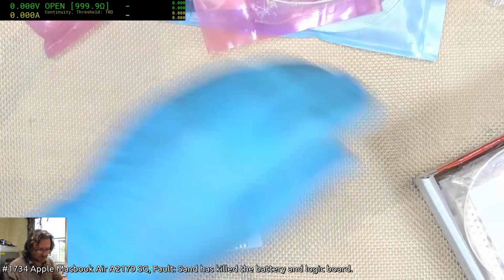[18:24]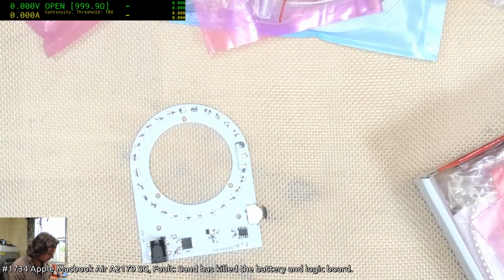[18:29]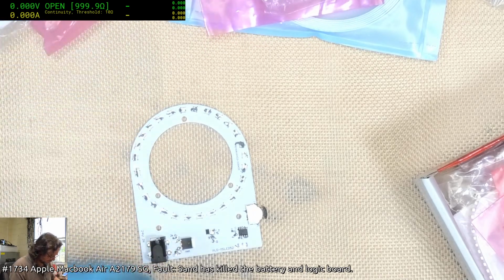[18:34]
Sadly, these things do take a long time. If you don't have fast circuit board manufacturing access, it takes a long time. I've got to admit, the JLC people do a pretty good job in terms of turnaround. They get it done quickly, but the problem is the shipping then. Can't do much about it when you've got slow shipping.
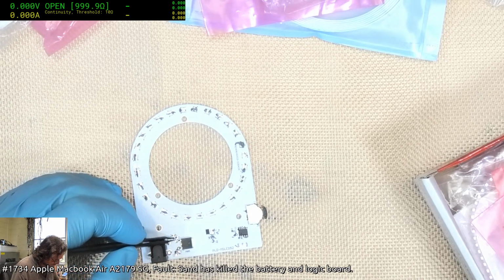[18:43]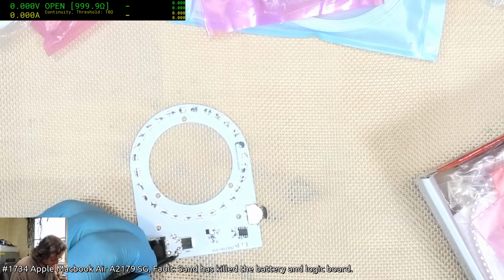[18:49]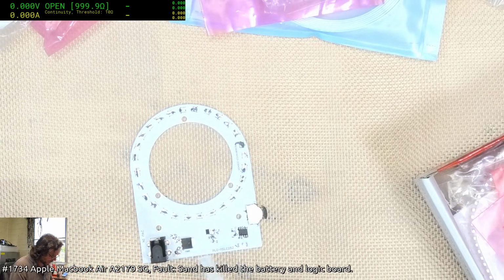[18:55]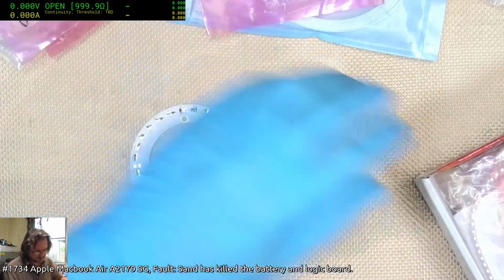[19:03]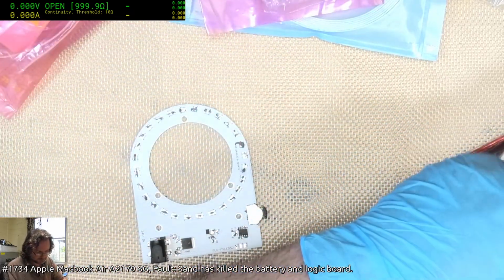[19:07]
And even if I paid $50 for shipping, it still takes a while, because I'm in a remote rural area and all the couriers just have a big fat cry about that. I could have used those ones. Oh well.
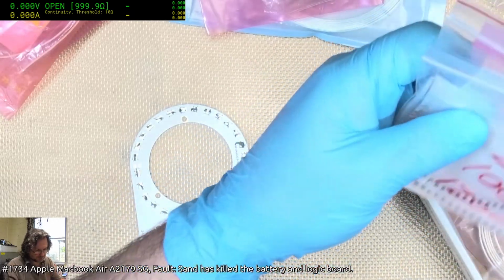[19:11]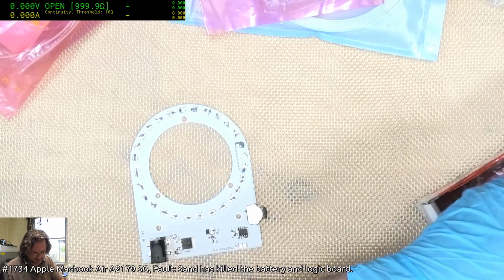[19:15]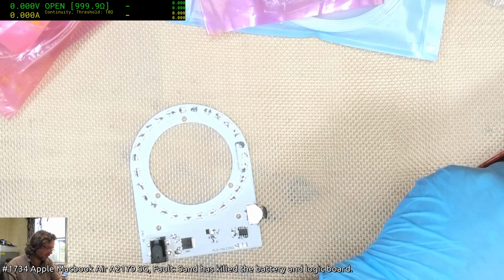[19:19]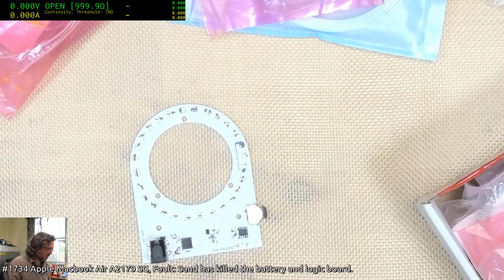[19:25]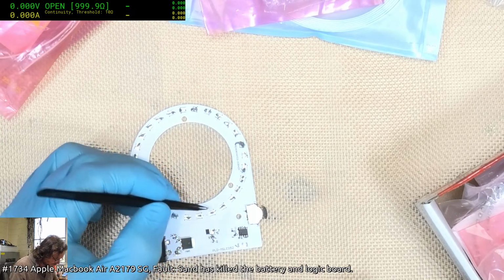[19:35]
Shipping from Australia to the US depends. It'll be somewhere around 25 to 30 Australian dollars, if you want it shipped in a way that is actually going to get to you.
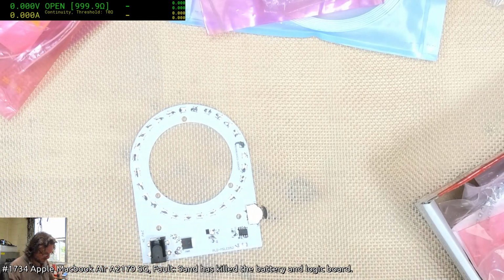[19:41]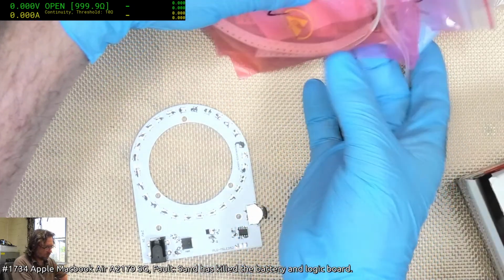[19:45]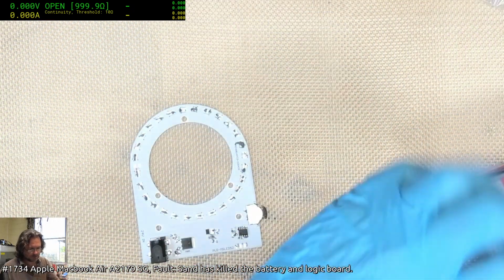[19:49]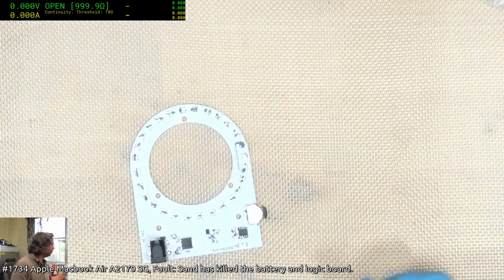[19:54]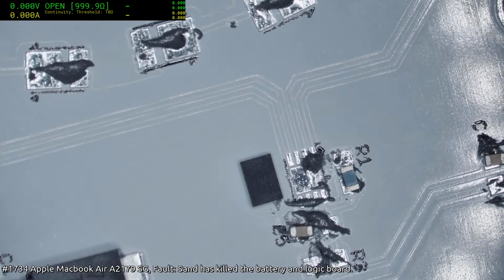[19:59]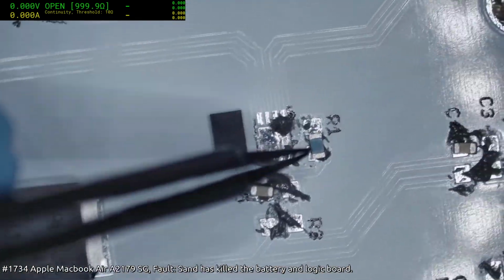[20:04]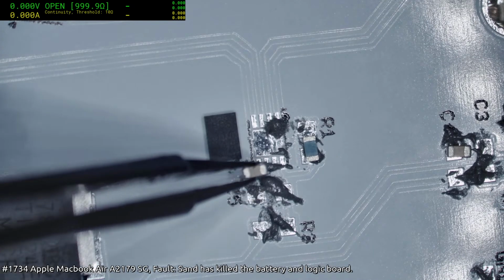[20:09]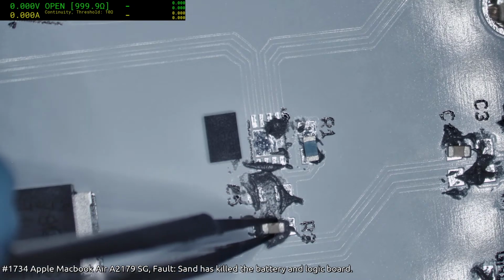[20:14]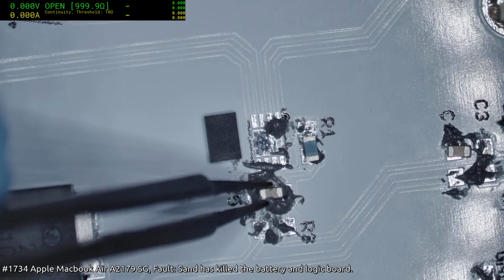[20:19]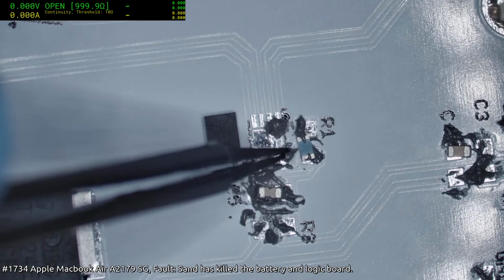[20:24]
Okay, now we're going to have to bring in the microscope so I can align these. They were 603s. These are 603s. This is where I got caught out last time, but then I made a change. That's way too much paste. Yeah, that's just going to make a big fat blob. Anyway. Remember last time I had the orientations wrong, by 90 degrees for these two parts here, but I fixed that. At least I think I have.
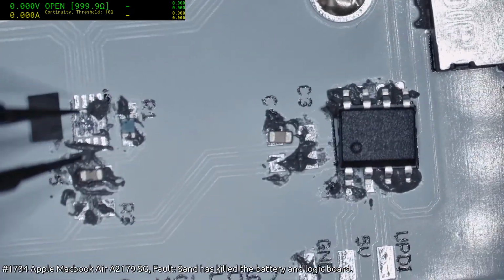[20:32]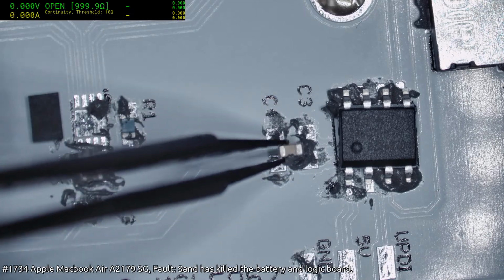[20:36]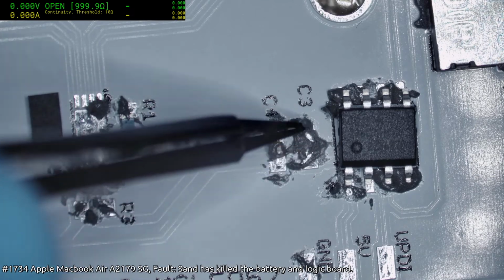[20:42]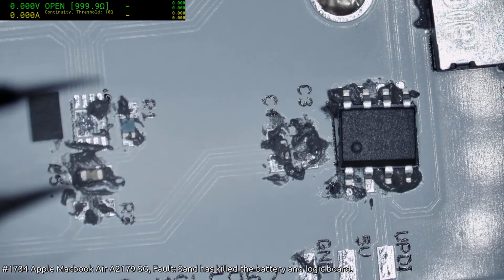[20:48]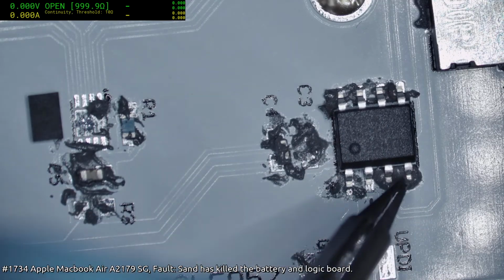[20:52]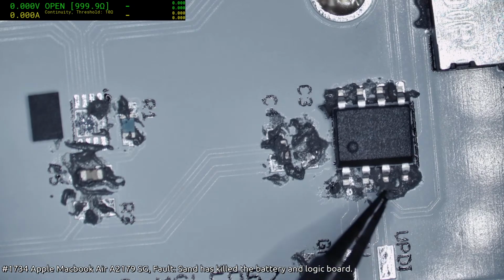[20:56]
Let's see. Yeah, this is really terrible. Remind me to get a stencil next time, because this is going to look horribly ugly when it reflows. But like I said, we'll rework it. It'll give you a good idea of just how forgiving this sort of paste method can be.
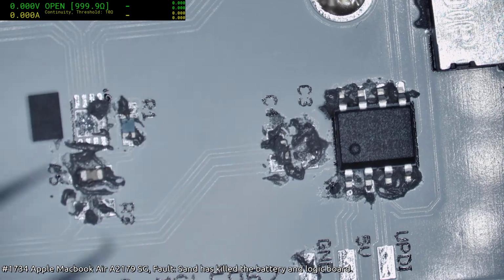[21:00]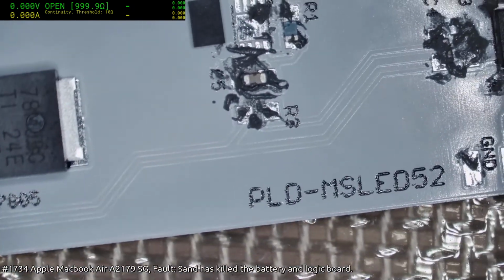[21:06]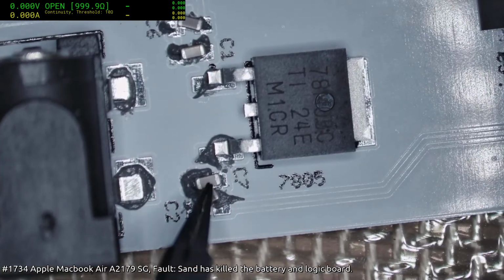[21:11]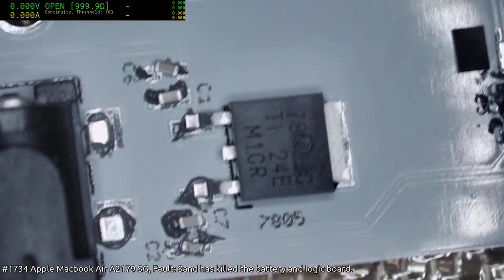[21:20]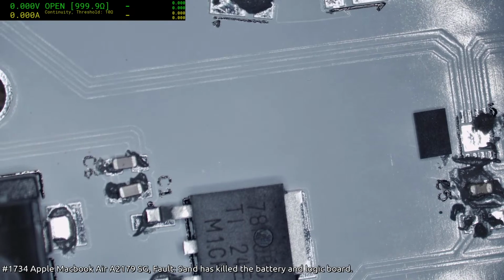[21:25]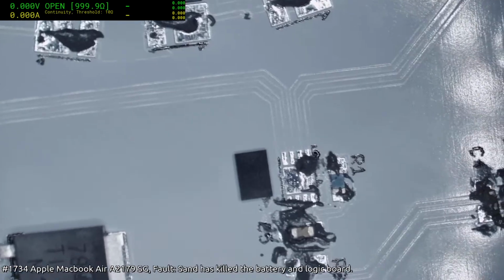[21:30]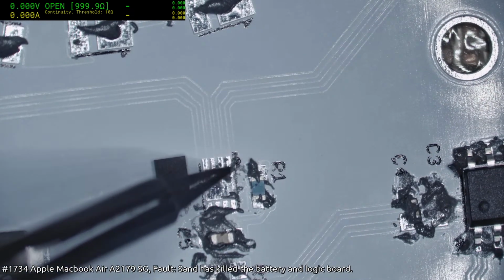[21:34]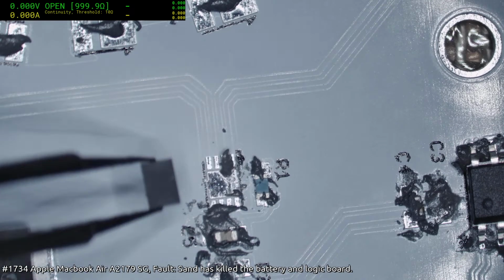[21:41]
Okay, I need a 0 ohm there. The biggest problem I'm going to have is probably some of them are going to have bridges and some of them are going to tombstone. And I do not know my orientation on this one. Is that pin 1 up there? I think that's pin 1 up there. So this needs to be rotated this way.
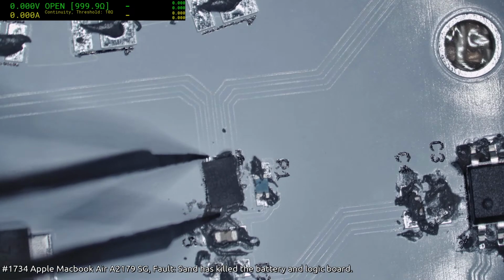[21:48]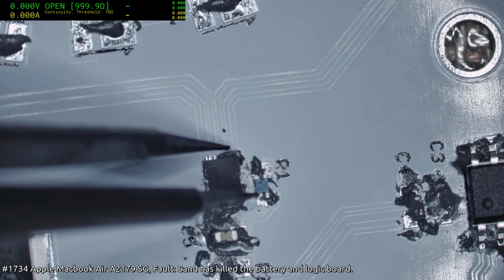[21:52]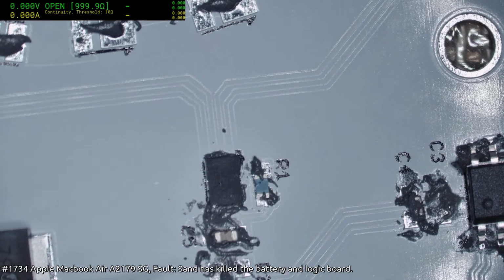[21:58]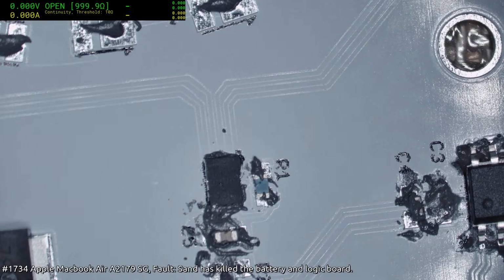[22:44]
Right, we need a 0 ohm resistor. Actually, we need a couple. 603 0 ohm, and then I'm going to need 120 603 ohm. Eric is the optimist. Okay, Eric, you can have that optimism. How is it I pick up a 0 ohm box and it is full of K values? The box literally says 0 ohms on the outside, and yet somehow it's got values like 10K in here. And absolutely no 0 ohms. It's fine, we've got another box we can use. Cat's messing with me, quite likely. Wouldn't put it past him.
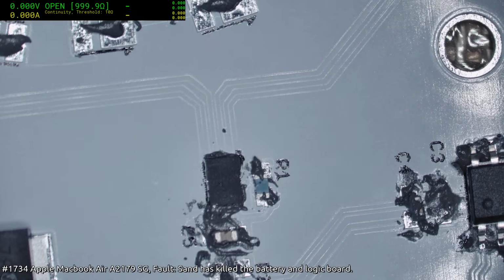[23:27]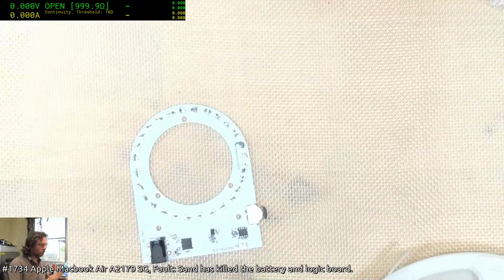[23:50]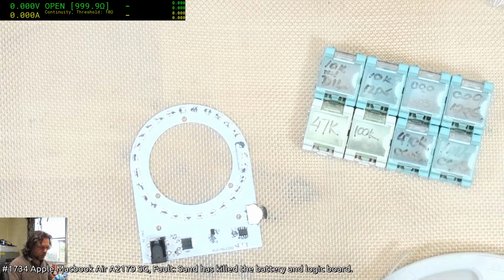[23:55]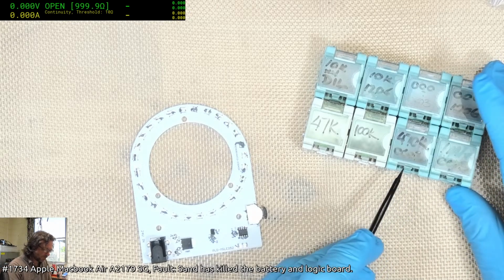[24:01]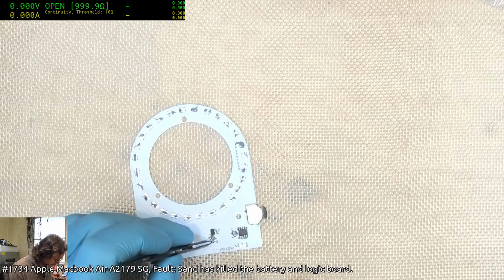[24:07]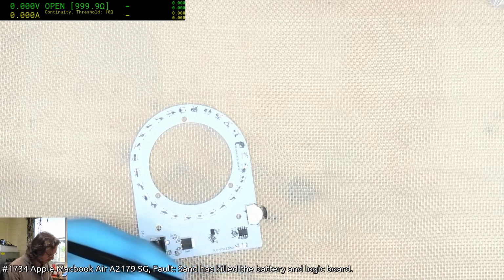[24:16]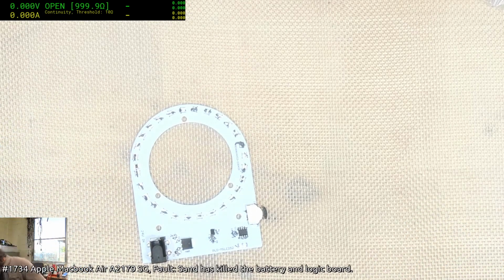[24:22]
There you are. Since I am likely going to be doing more manual building like this, I've ordered myself another 100 of these type of containers. These ones are all pretty old now, so the little locking tabs are breaking off. So well and truly due time I bought a new set. When I bought these ones, it was pretty hard to get a hold of, but now you can get them anywhere. A lot of things have changed thanks to the likes of AliExpress.
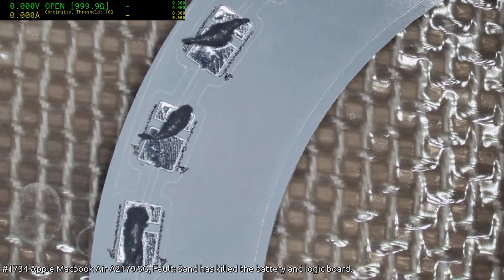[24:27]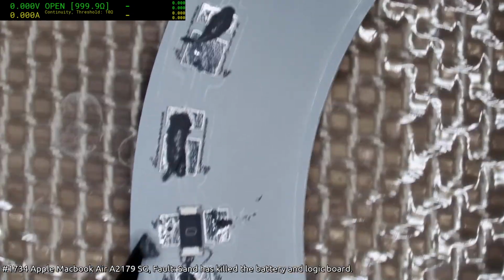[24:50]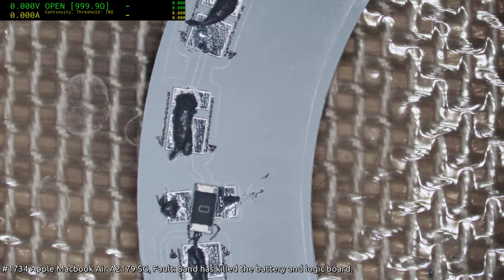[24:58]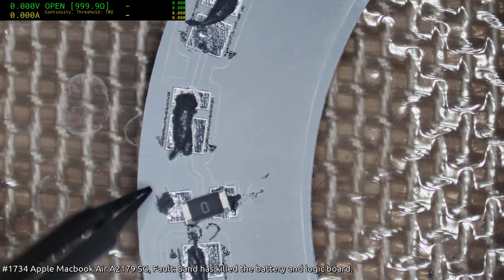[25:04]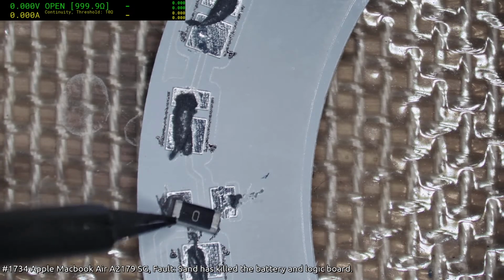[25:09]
Oh, there, Elon. Okay, we didn't put paste down for our little bridging resistor. Now we have to have this bridging resistor amongst other things because this is an aluminium board, which means we actually don't have two sides as such. We've only got the one side. You can put holes through and do vias and all that sort of stuff, but it's not going to give you a second board side. So you have to go back to the fun and games of working with only a one-sided board.
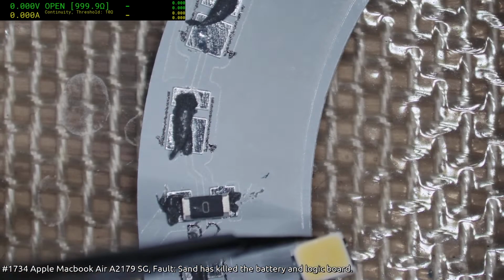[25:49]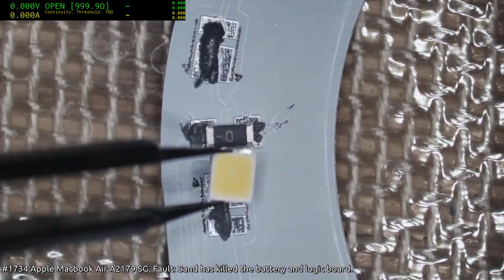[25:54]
I'm really not bothered about trying to make it nice at this point, because like I said, this is a one-off build, and after this I'm just going to go stencils. And when you go stencil, then you do want your paste to be like this, because if it's too liquid, it's just going to go everywhere, and it's not going to hold its corners. So I'm not bothering with those little steps, simply because it's not going to matter beyond this one job.
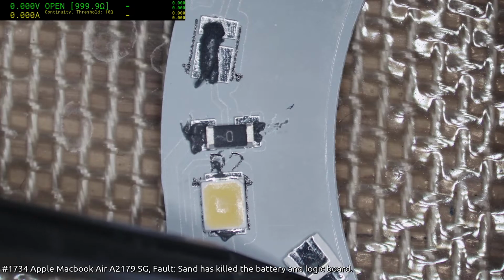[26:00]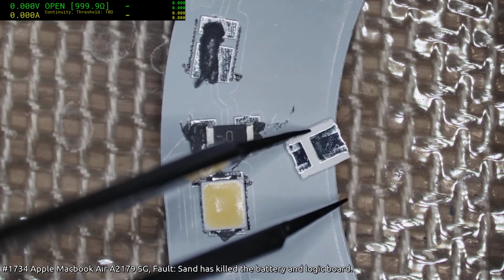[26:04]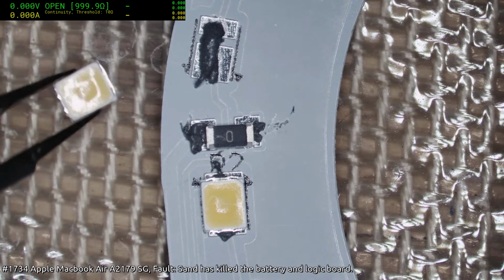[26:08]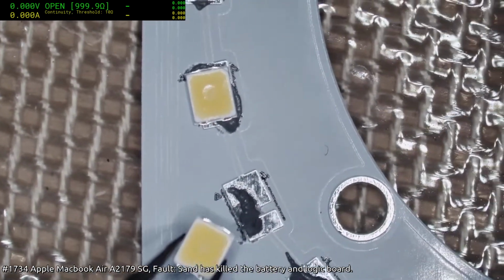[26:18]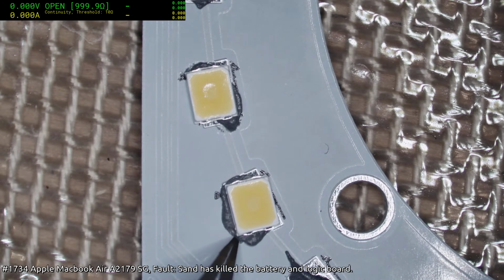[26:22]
I'll tell you what it is, I wish I had my vacuum pencil with me. It'd be easier to flip these bastards over. Hey Dipum, yeah, well, Lewis failed in his arrival, so I decided to take the time.
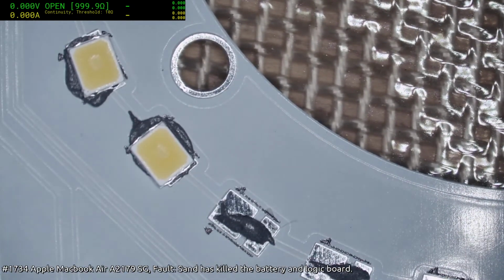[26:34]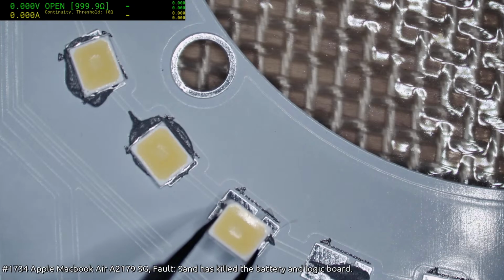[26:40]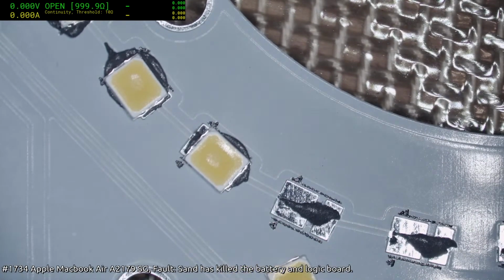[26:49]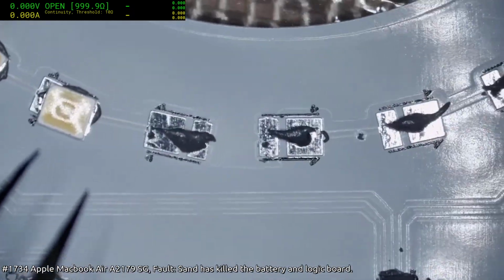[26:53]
I could end up short on these LEDs, but if I do, it's not going to be the worst. I can always rework it, and also the controller will manage it, because the controller is current based. So if we do have a shorted LED out there, it'll adjust the voltage accordingly.
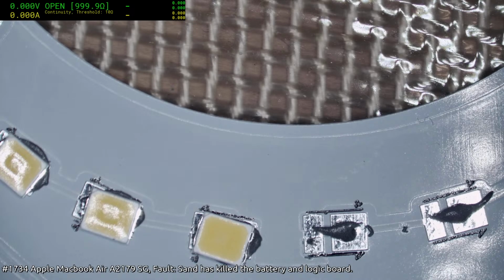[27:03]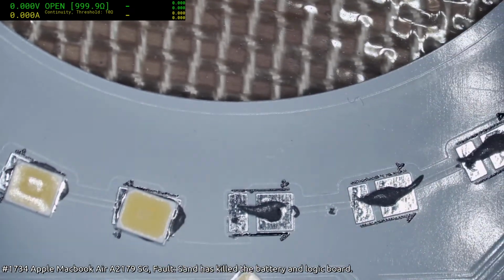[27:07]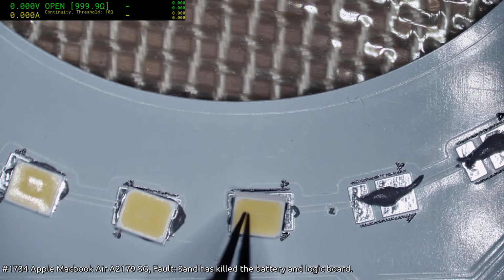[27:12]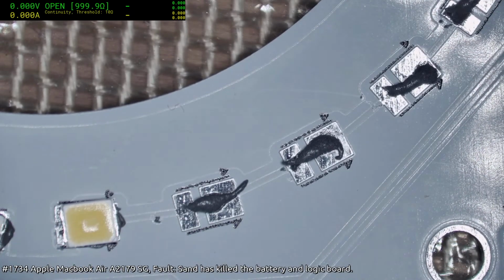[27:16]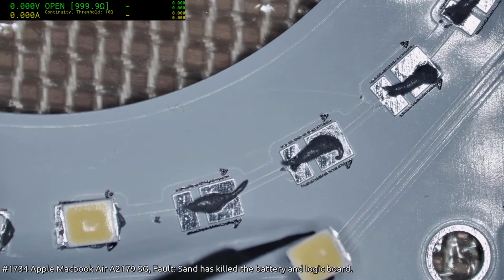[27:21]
Okay, we've got that turnaround. So I wonder if a polarizer will mess with things if I put it on the camera, because the LEDs are flipped around.
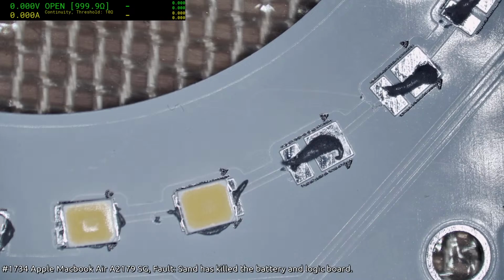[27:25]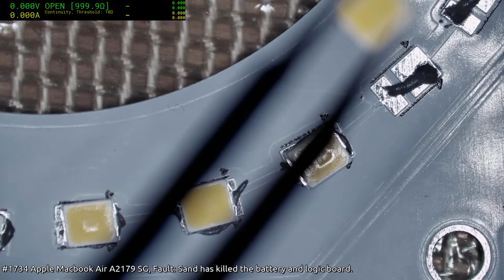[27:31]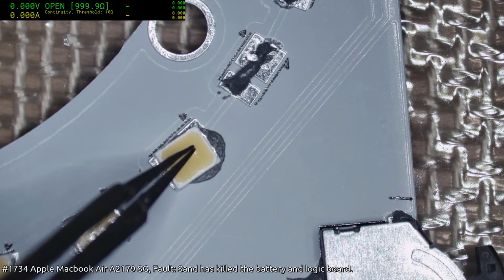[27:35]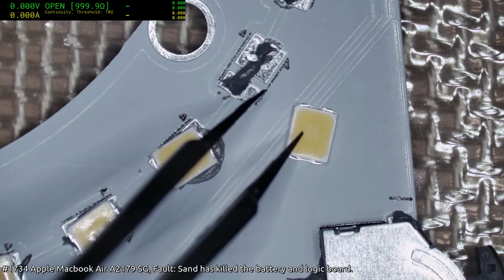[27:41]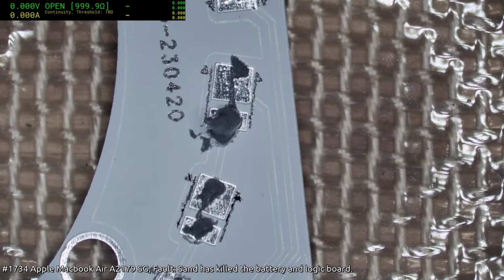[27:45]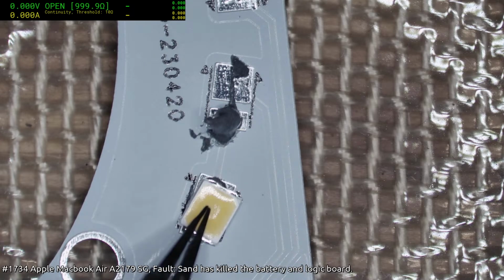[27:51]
This is probably the most painful part of the process, because every time you put down one LED, you've got to adjust rotation and everything like that and put the next one down. It's not like it's a normal part where you can just keep your mostly orthogonal orientations.
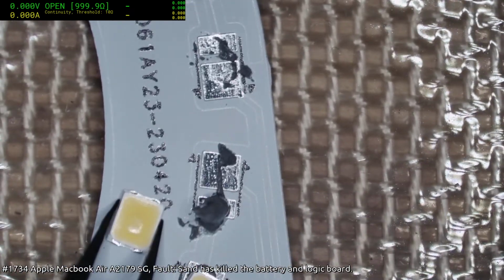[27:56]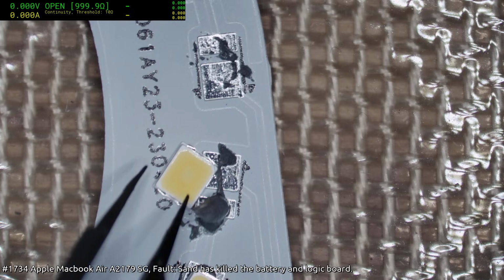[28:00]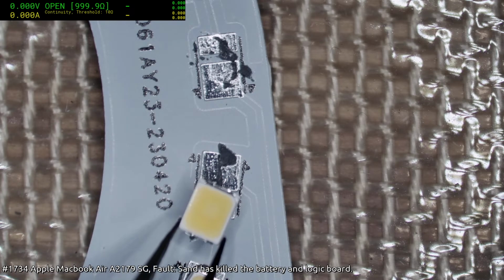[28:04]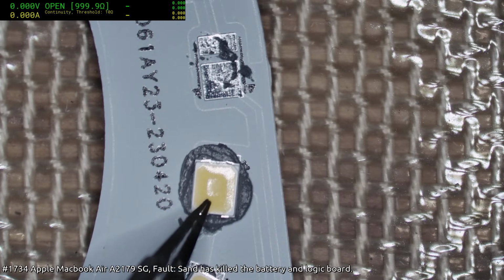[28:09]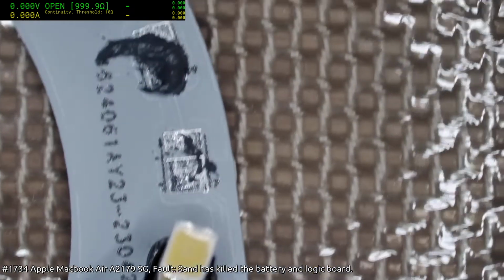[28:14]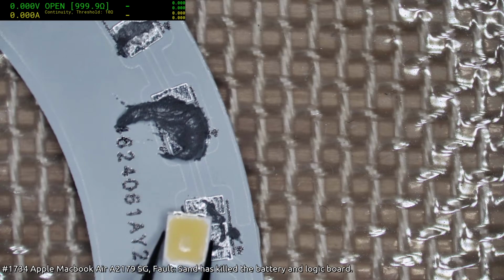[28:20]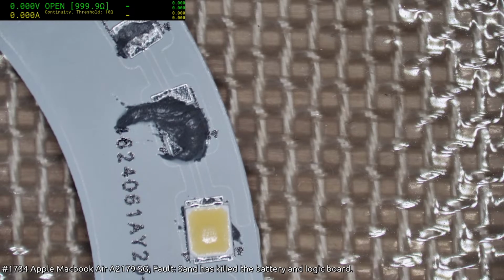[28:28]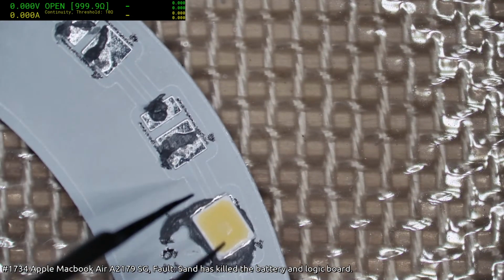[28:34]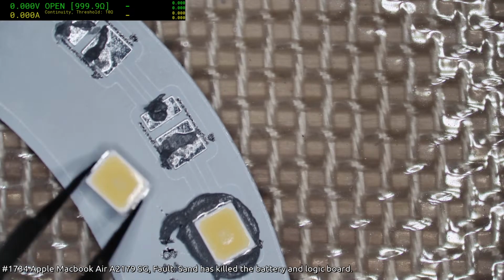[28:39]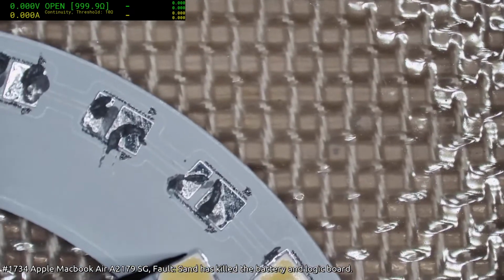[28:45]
Oh yeah, let's go crazy. That's just way too much paste. Colossally way too much paste. I'm well aware of it. Don't need to tell me what I'm doing wrong when I already know that I'm doing it. And conversely, there's almost not enough paste on that one. Geez, it's like it's my first day being a bricklayer or something. Kicked off the job.
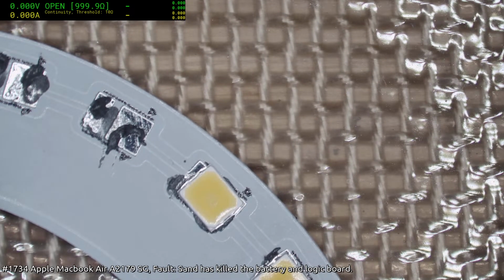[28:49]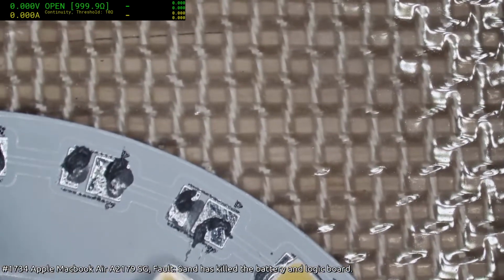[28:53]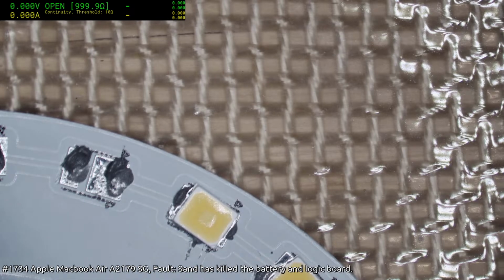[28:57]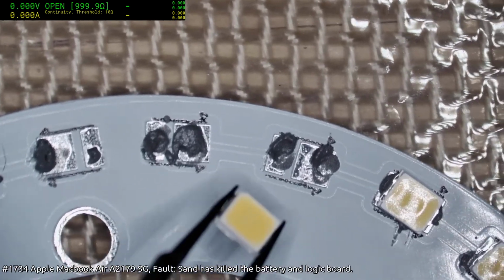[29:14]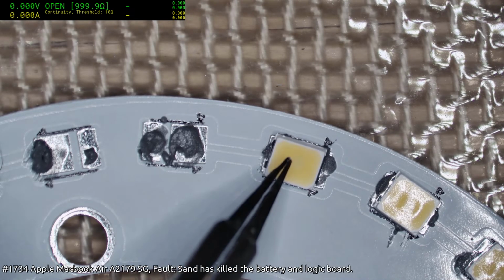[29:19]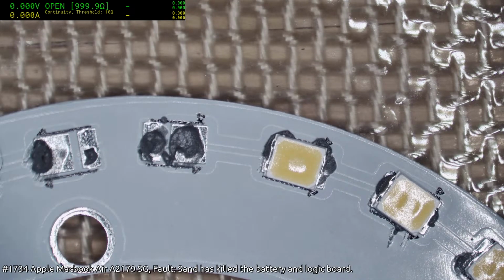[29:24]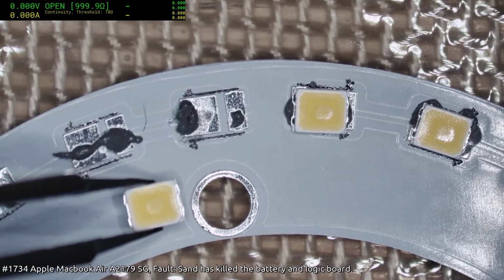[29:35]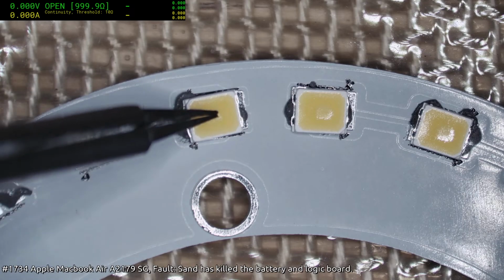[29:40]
Yeah, the cost of shipping is ludicrous with a lot of those places. It's funny, we have sort of entered into the realm of being more dependent on shipping than ever before, and it's not really yet flowing along with the more demand should result in lower costs, assuming supply keeps up. I think a lot of companies got caught with their pants down when it came to the whole surge of popularity of buying things online.
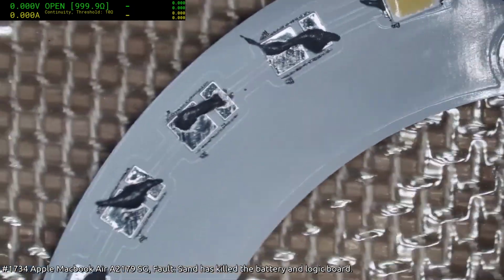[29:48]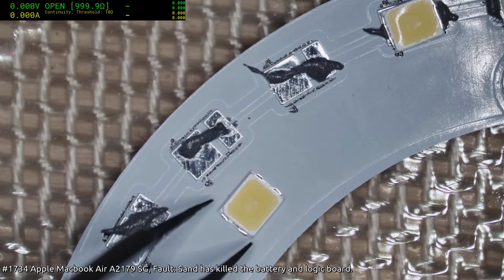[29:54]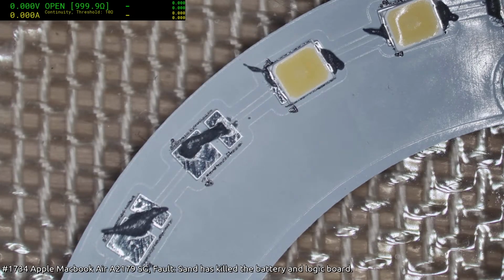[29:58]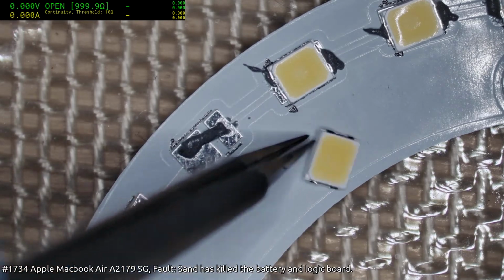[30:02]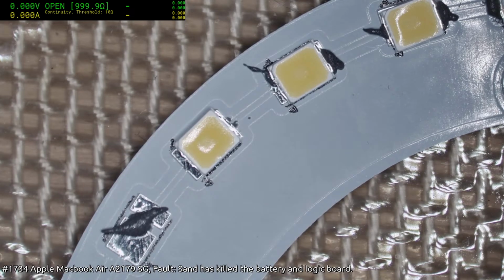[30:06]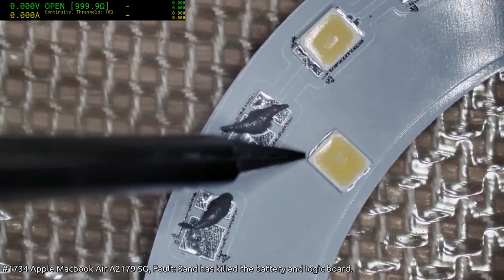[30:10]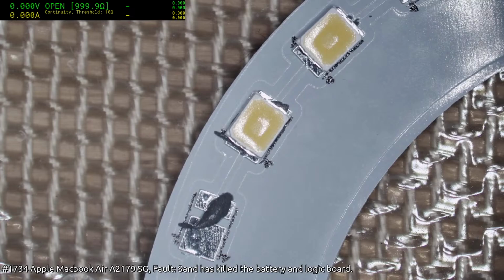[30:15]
Personally, I thought it was fairly clear from definitely like 2000 that online shopping was going to become a big thing, and letters were essentially phasing out. I mean, the whole letters phasing out was becoming clear by the mid-90s, when we had emails. But instead, as per usual, the industry was very slow to react. Then they got all upset when all their revenues are plummeting through the floor because no one's sending letters. Then they want bailouts, and then they charge a fortune for the fact that we don't have enough infrastructure to support the demand. And it's like, geez, guys, you only had 20 years to catch up.
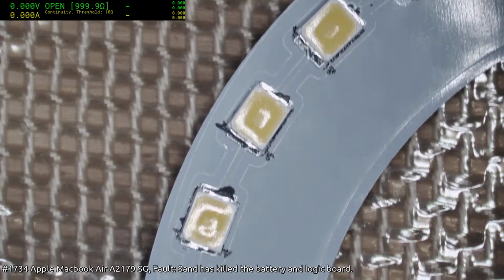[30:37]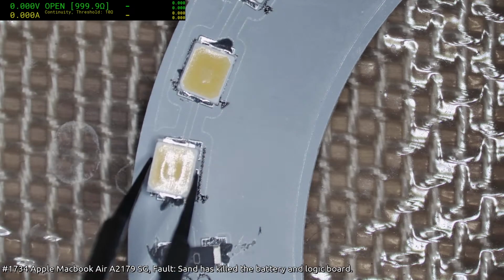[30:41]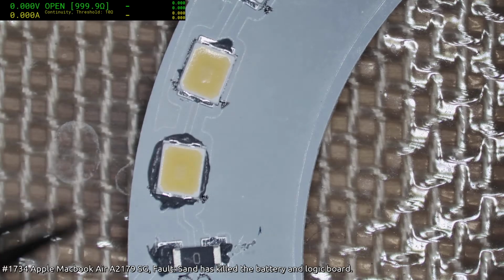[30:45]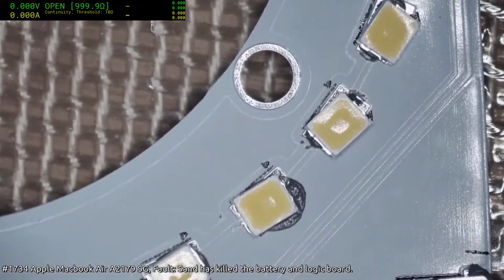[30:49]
Sorry, Greg, what did you mean? A running what? A running bond? I don't know what you mean by that. Oh, do you mean the chains? I don't know. I don't know what you mean, Rick. Sorry.
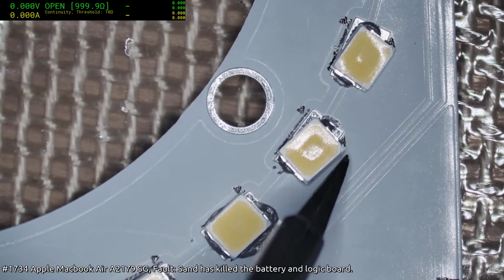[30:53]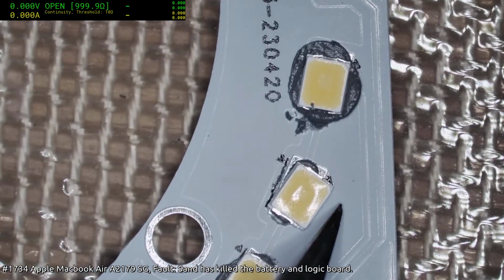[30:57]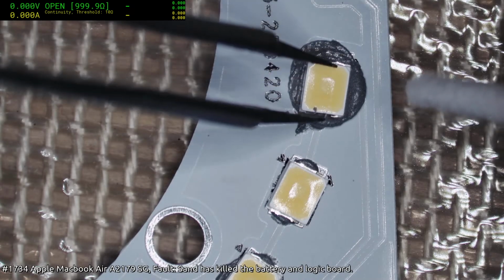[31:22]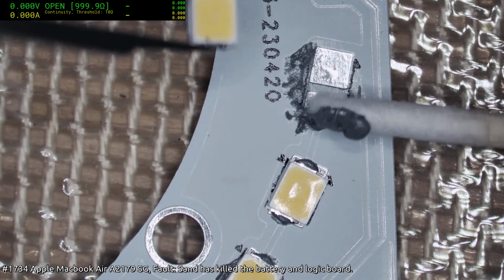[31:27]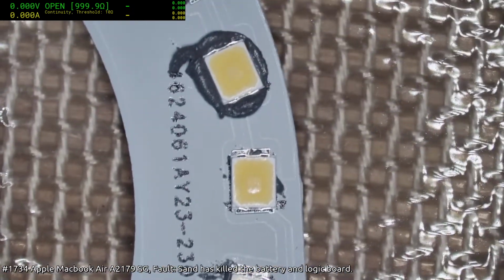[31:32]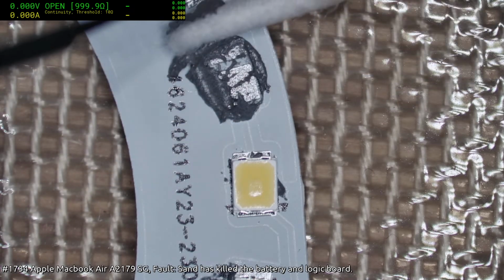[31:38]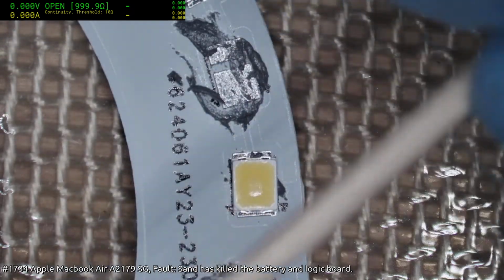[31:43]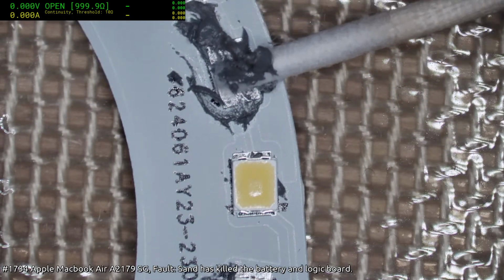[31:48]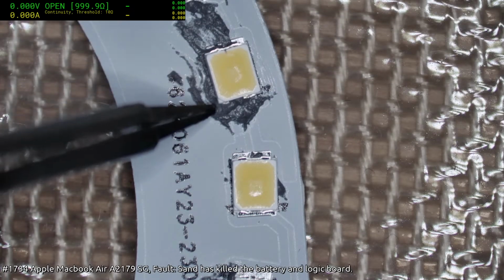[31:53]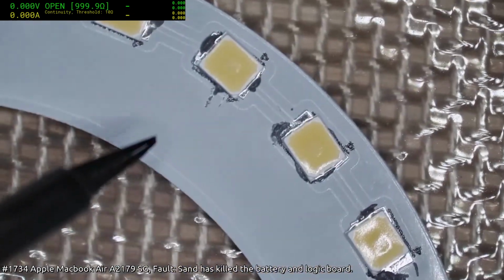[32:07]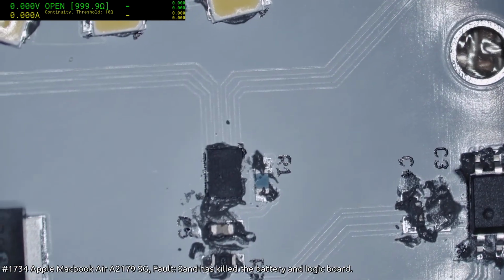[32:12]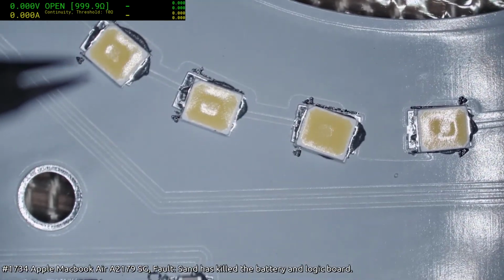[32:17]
Okay, that clearly has to be cleared up. I mean, I can tolerate a fair bit of mess, but that's just a little over the top. Still gonna be messy. How to make a colossal mess. Make people across the internet scream in agony. I'll just go like that. That will just ball up when it goes through the reflow, so I'm not too worried about that. I don't need to worry about C3, that's not required. Yeah, I think I'm good otherwise.
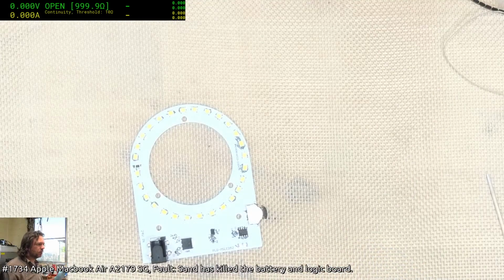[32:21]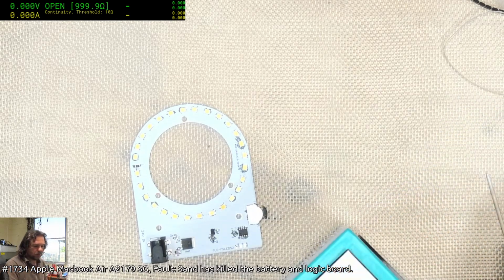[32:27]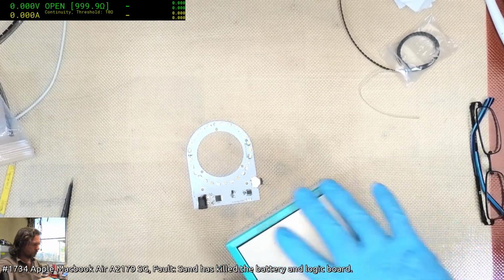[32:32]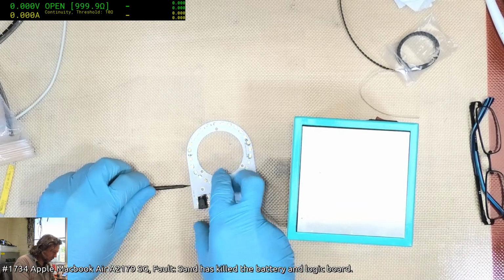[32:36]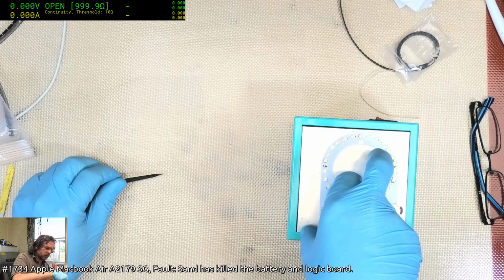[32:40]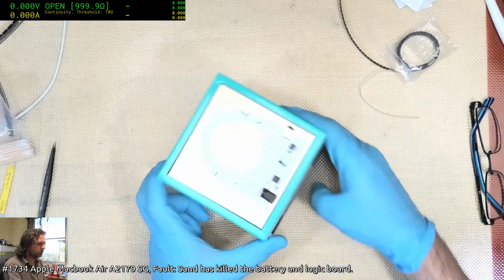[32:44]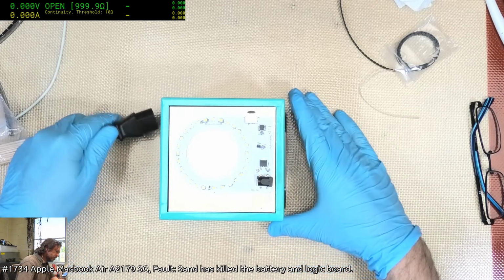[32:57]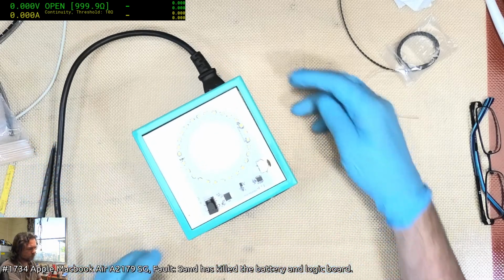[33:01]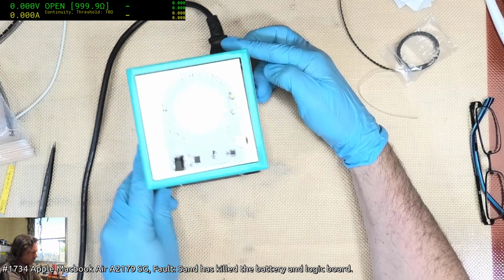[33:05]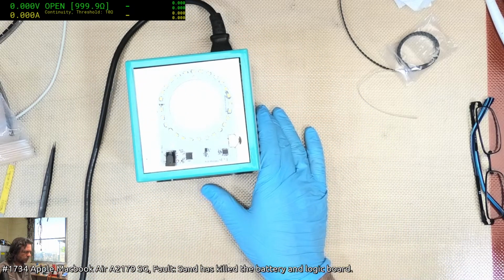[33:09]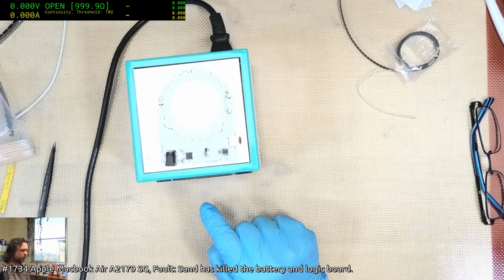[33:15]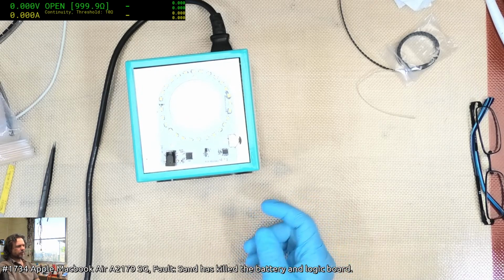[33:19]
Okay. Alright, so currently this is set at 143. I'm going to let it go up to that. And when it gets to 143, I'm then going to push it up to 200.
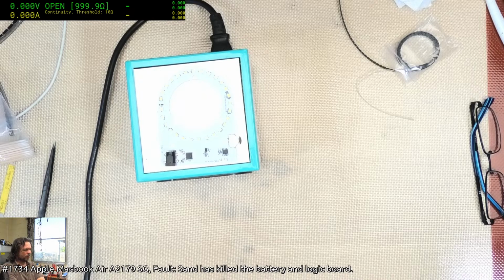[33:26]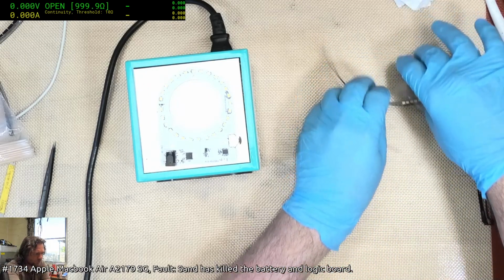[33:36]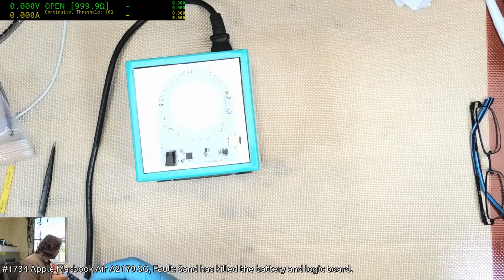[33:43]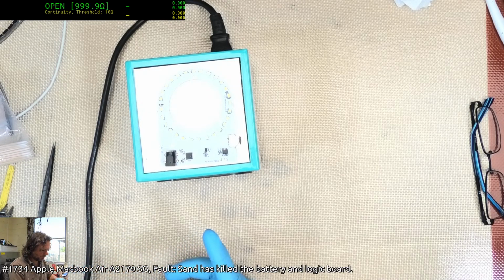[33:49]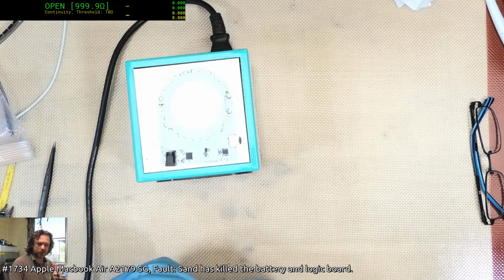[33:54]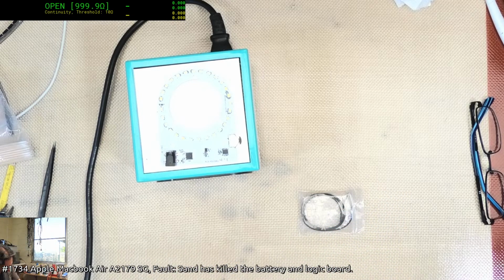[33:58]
Hey Mohammed, it's not currently commercially available for sale because I've not yet been fully happy with the building of it, and there's a few other things I've still got to work out. These things do unfortunately take time if you don't want to release a dodgy product. Unlike my software. What the flippin' heck? Prickle, damn it. I thought I was being hit by a wasp.
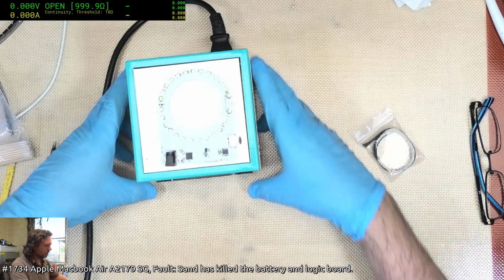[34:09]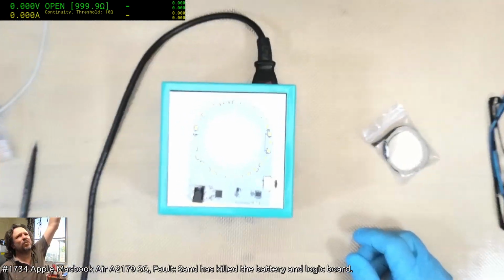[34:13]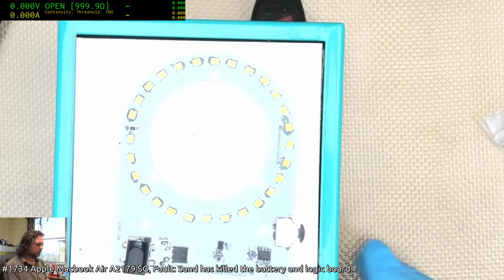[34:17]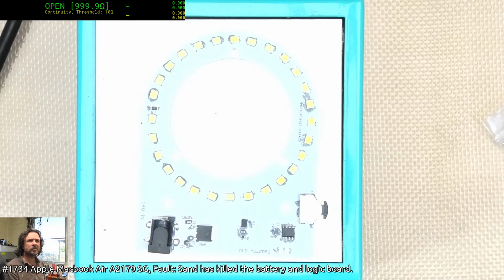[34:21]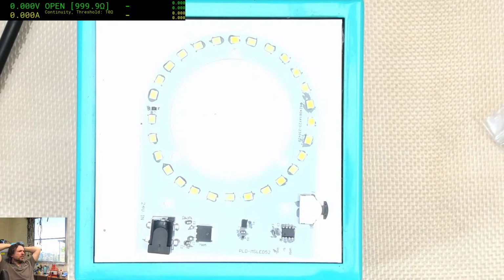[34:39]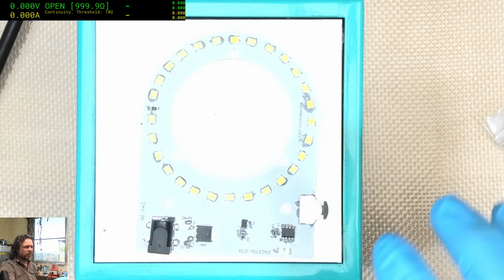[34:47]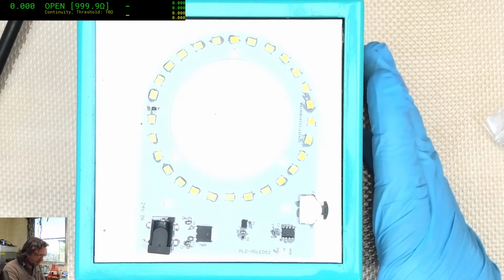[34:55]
See if I can centralize this and come on down on it. You do some interesting things there, Defcom. Okay. This is really not the right way to do reflows, but short of getting myself another reflow oven for the desk, I'm just not going to do it. Okay, so at 145, you can see it starting to heat up. That's great. Now we have to push it up to about 210.
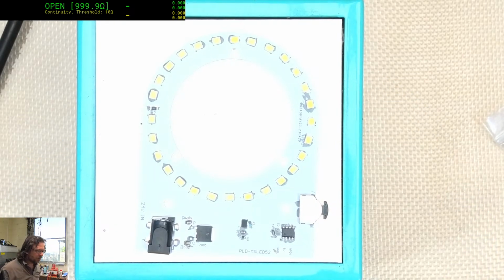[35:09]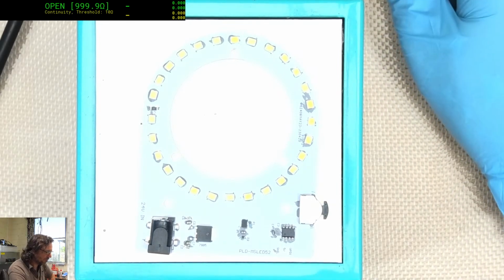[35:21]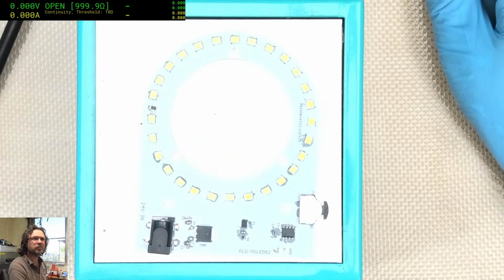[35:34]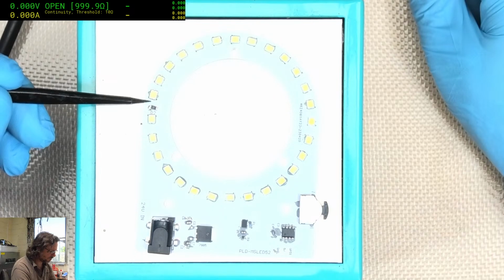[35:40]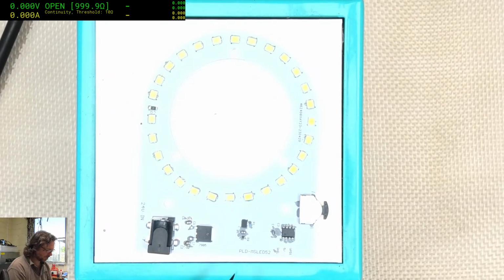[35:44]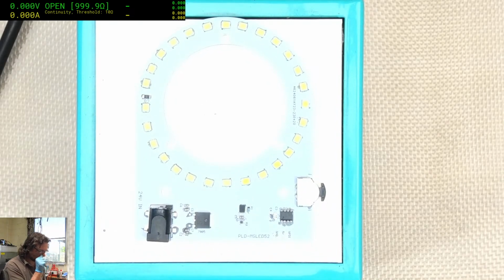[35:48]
So we've sort of done the ramp, and now we're going to make it do the spike, and then once it reflows we'll switch it off, and that's effectively like the quick come down. Fortunately, with the airflow coming across here, it won't take long to cool down. Okay, see the back one's already gone. There's definitely an unevenness here in the temperatures, because none of this up here is... Yeah, there we go.
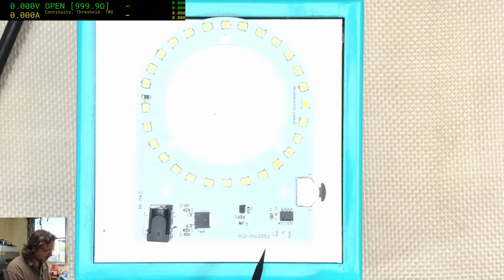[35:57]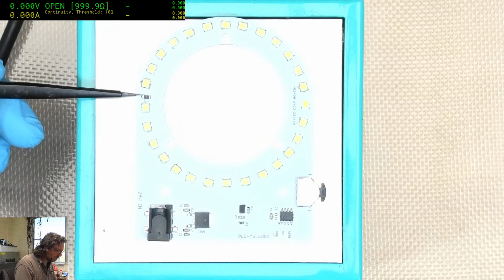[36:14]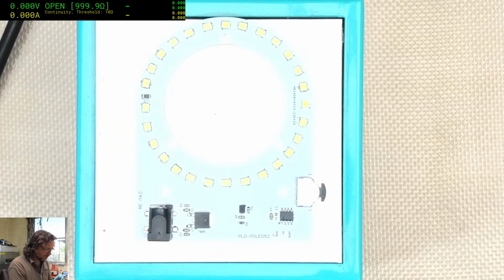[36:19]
Okay, so we'll switch it off. It only got to 190. And I'm just trying to avoid the tombstones. It's easier for me to push and prod things while it's in this state, because once it cools down, it is pretty hard to redo a lot of the joins. There you go. So yeah, we're just going to let that cool off now.
James, I usually get hit by wasps every couple of weeks. It doesn't help that I do a lot of yard work, and there's a lot of wasp nests out there. I don't have a problem with wasps under normal circumstances. We have a lot of them building nests around the house, and we don't have any grief with them. But obviously, when I start tearing down their home, they are going to get pissed off and come after me. And yeah, they do occasionally.
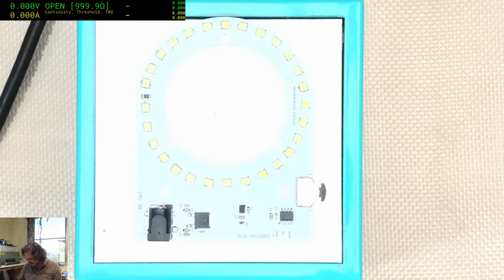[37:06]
But overall, we don't have a problem with wasps attacking us, even though they are everywhere. They're just defending their homes.
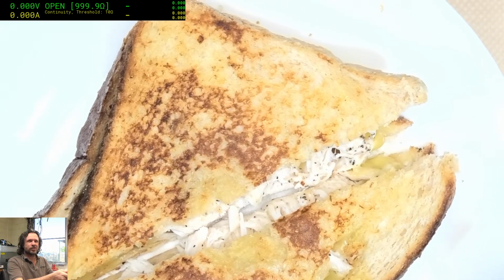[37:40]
Hey, sweetie. Right. Okay. Let's take my gloves off. Thank you very much for that. Alright. Lunch has arrived. Nice chicken toasted sandwich. Nice.
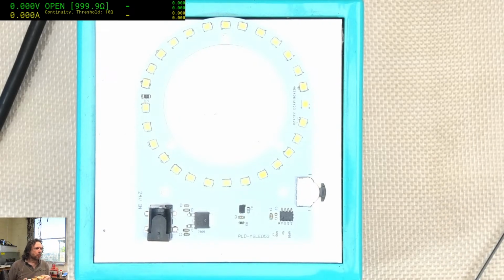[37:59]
Yeah, the hot plate's okay for these sort of one-off jobs. Like I said, I would not like to do this as a production run. So I'll just get myself another reflow oven for the production. And I've got the controller board that I built for the drying oven. I'll just make another one of those, but I'll program it so that it will have the reflow curve that I need.
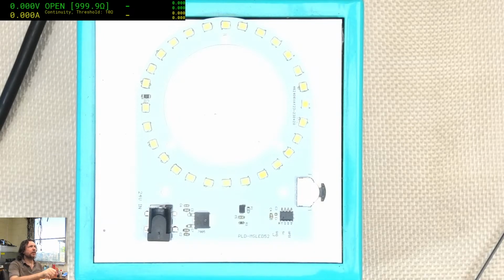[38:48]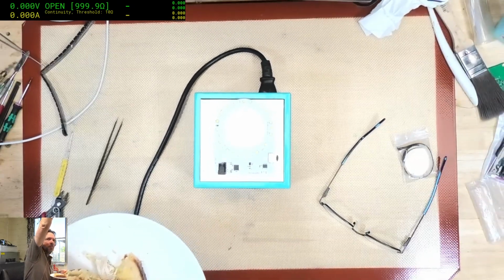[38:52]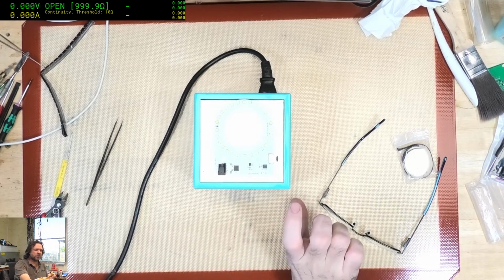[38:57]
I do need to get a larger heat pad, but what I wanted was one that was lower profile. So this stands around about 100 millimeters tall. I would rather something no more than about 25 millimeters tall, and I can get them, they are larger, but again, shipping's the killer.
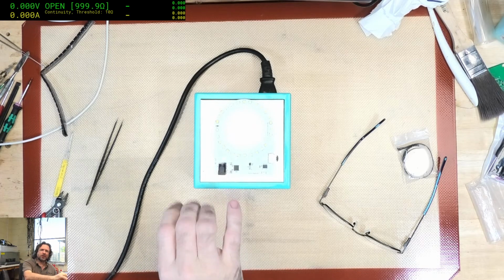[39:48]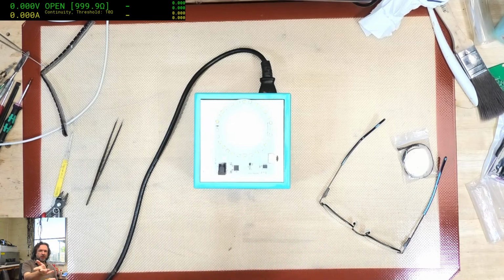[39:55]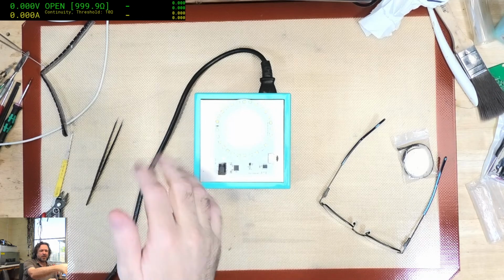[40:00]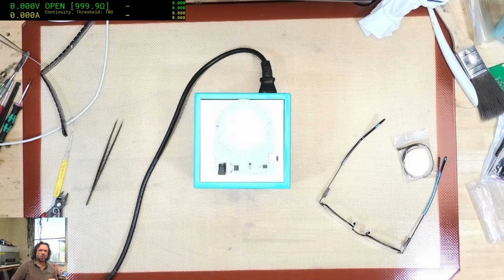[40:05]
Preston, surprisingly, no, none of the plastics, any plastic component, as a general rule, is rated for reflow temperatures. Most of the time, things will melt if you direct hot air at them, like onto a sharp point where the heat can focus and build up. But I can take a hot air wand and put 350, 400 Celsius above it, and it won't melt so long as you don't get that air striking on the corners and things like that.
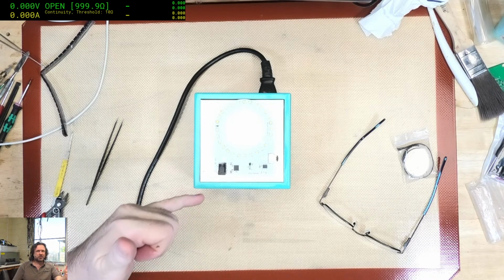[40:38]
Yeah, most plastics. I can't think of anything off the top of my head that is not reflow rated. But if you take your hot air wand, even at say 250, and you focus it on one of the corners, then yeah, that will melt. Consider it like the wind chill factor, except it's more like the hot burny factor.
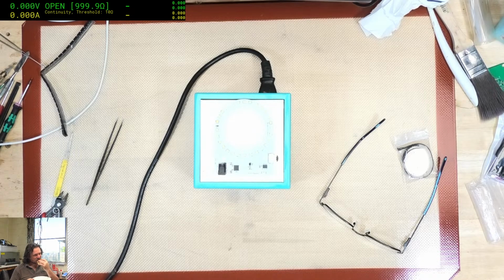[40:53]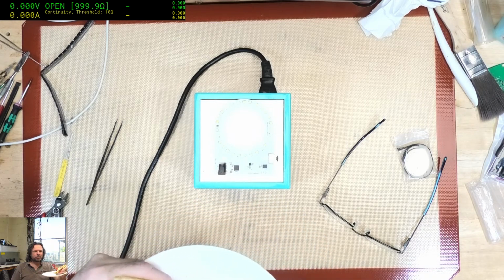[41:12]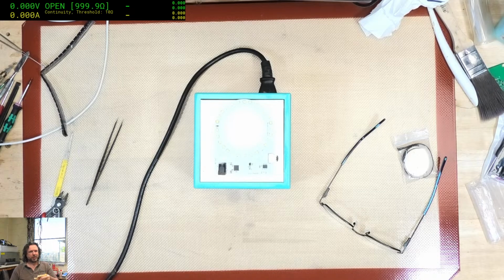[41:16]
This is another good reason why I wear gloves, because I can take the gloves off and I can eat food without worrying about ingesting lead.
We're getting there, we're almost finished. So, did Lewis's stream start? His Ask Me Anything stream? Assuming he even turned up. It's 2 o'clock in the afternoon here. He shouldn't be streaming.
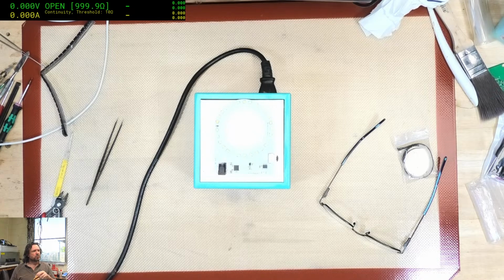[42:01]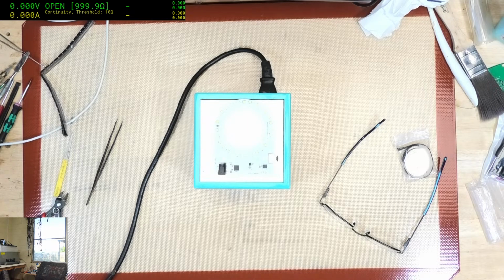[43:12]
Alright, just gotta go wash my hands, get the oil off, and then I'll come back, new gloves and everything like that. Just had to get new box of gloves as well, so just ran out of the other one. Oh, the Christian lawyer. Loyola, sorry.
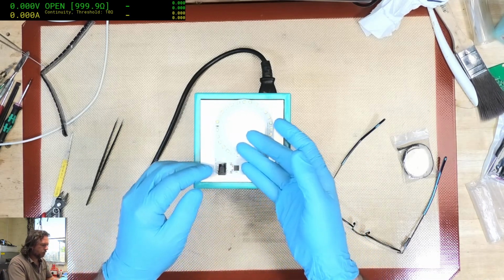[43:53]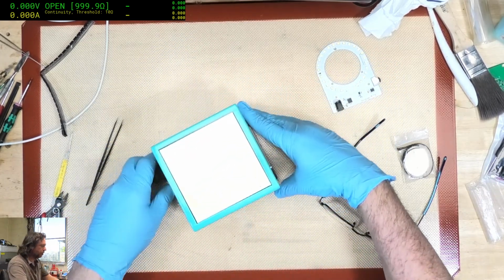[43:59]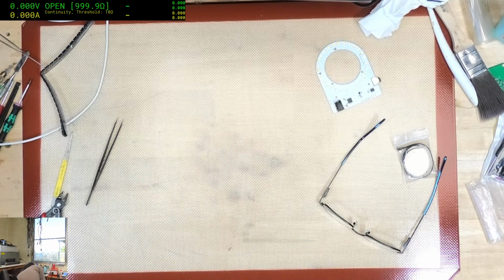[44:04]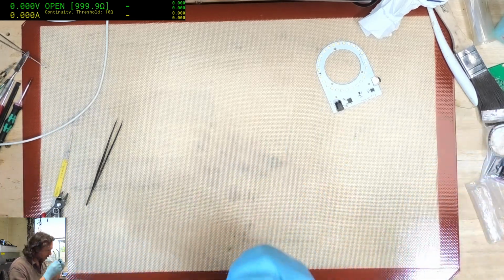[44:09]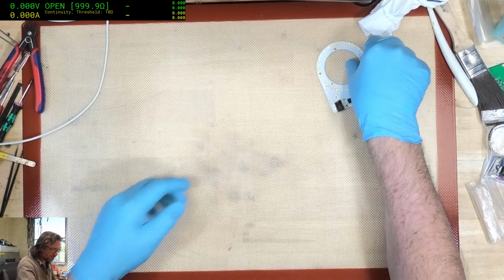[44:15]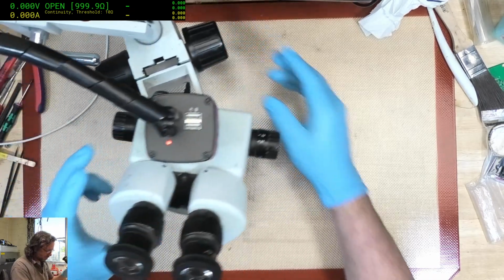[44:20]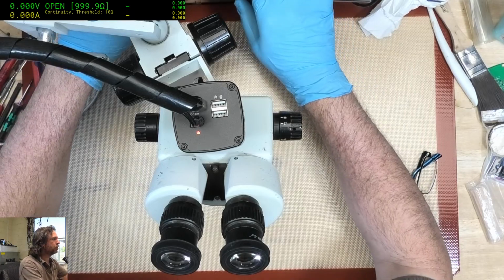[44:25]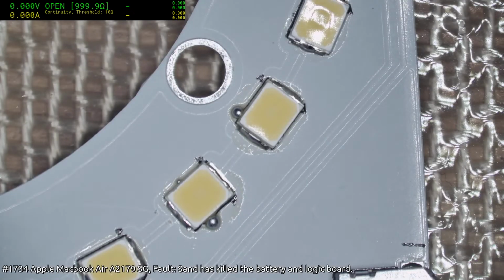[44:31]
Okay. That was actually still pretty warm. I probably should have taken it off the heat plate a fair bit earlier. Oh well. Okay, now the fun part. The rework. Where we try to find out what we didn't do right. And naturally the switch will kick in. There we go.
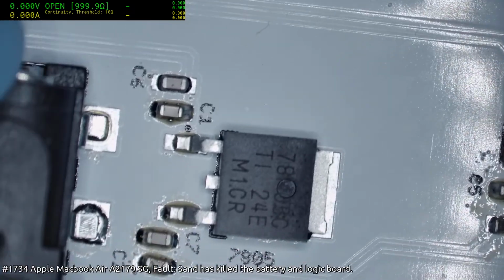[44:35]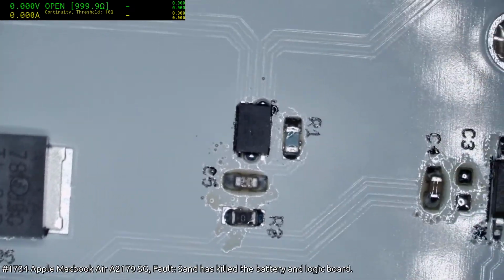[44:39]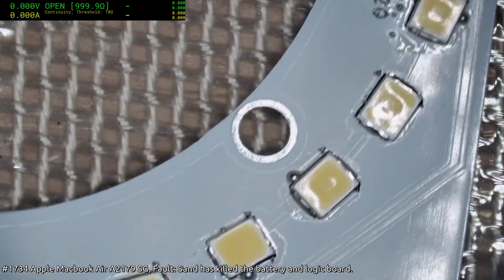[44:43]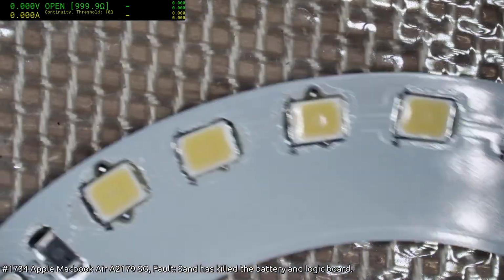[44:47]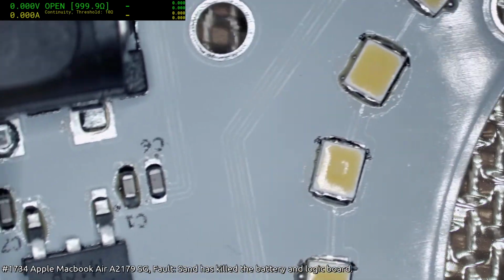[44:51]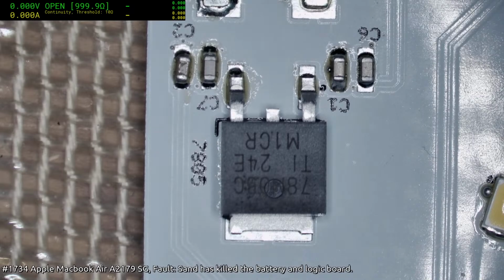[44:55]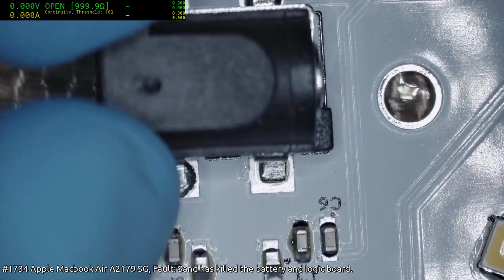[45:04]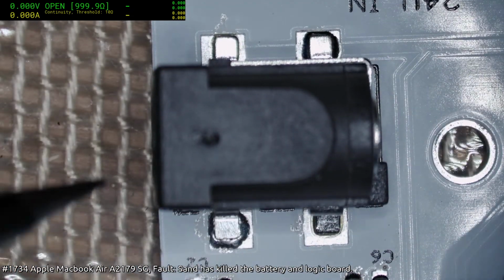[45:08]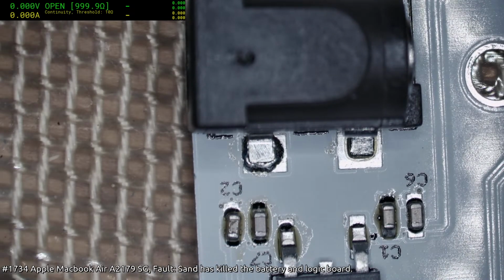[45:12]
Probably could have used a little bit more on the tab for this, but that's okay. I can just see a bead of solder in there, so that's okay. The jack, likewise, could have done a little more on there and there, but again, there's a little bit of pillow and heading on here. We'll see how that behaves.
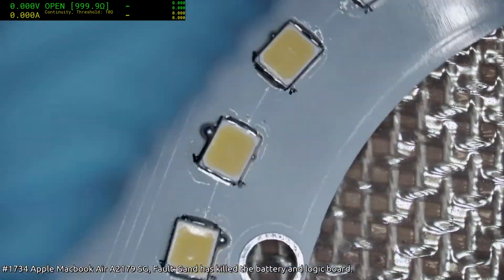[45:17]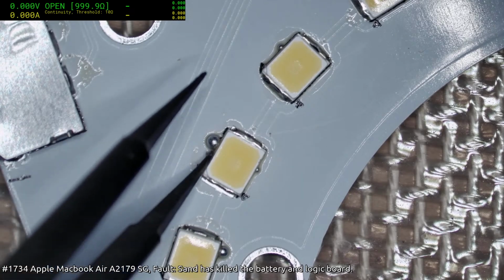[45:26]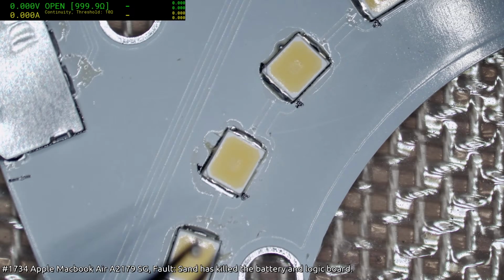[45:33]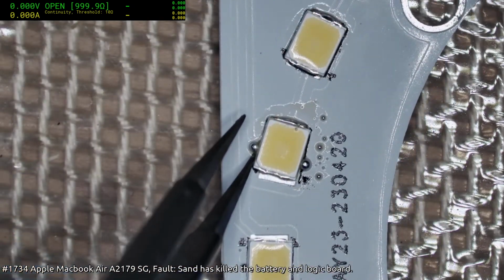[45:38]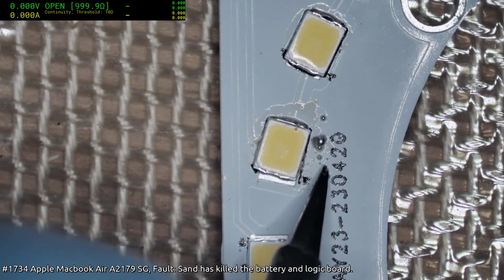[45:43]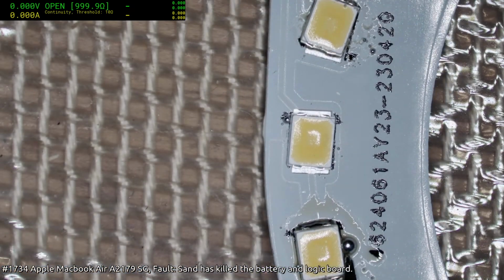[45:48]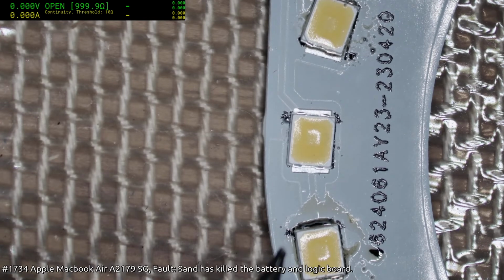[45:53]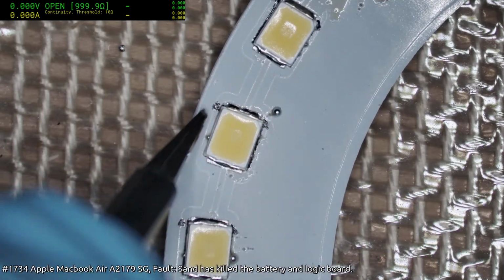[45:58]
What happens with the automation is that the USB channel gets knocked out by the exhaust fan. I'm trying to work a solution. I've even put the exhaust fan on a UPS, and the UPS has an automatic voltage regulator controller on it, but it still doesn't seem to squelch the glitch. It's improved from the past, but it still every now and then happens.
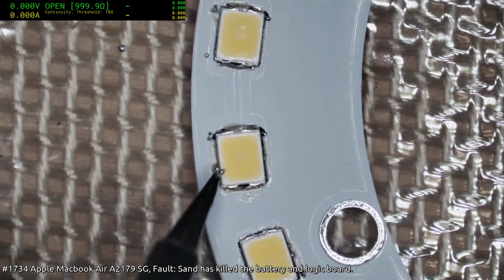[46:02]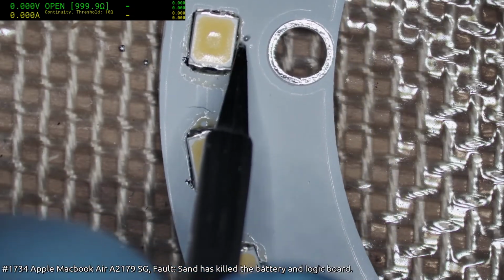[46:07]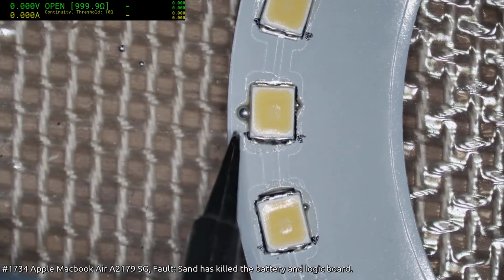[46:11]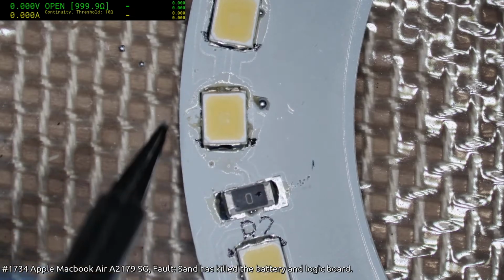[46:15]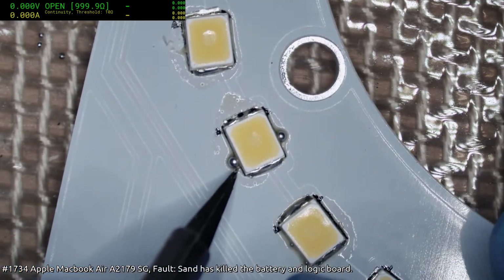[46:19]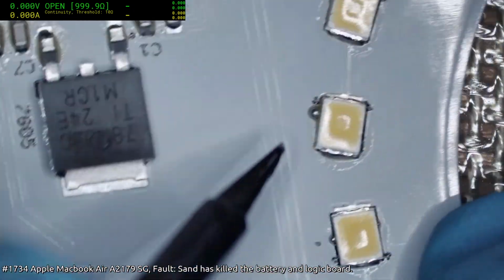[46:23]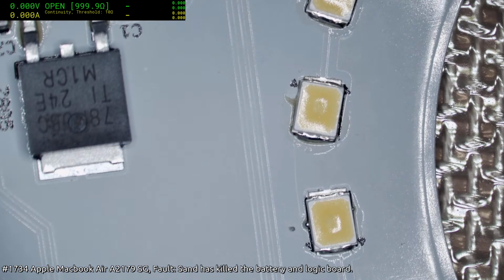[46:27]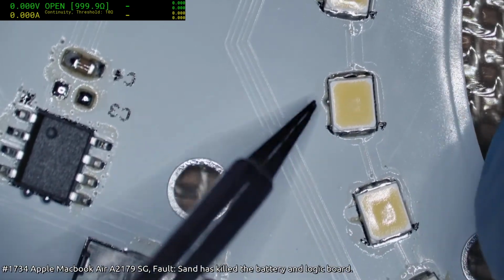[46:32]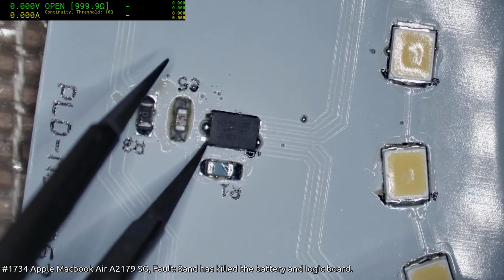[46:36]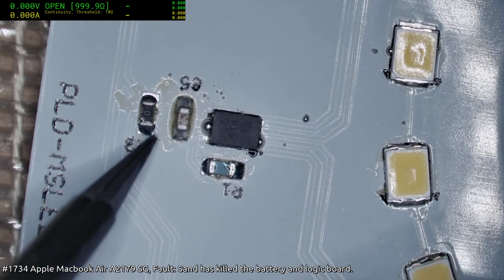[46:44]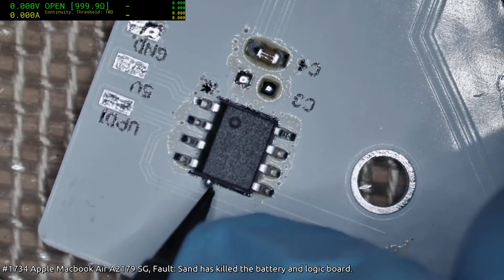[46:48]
I really don't need to be taking these off. I guess I should only just get the worst of them off. Hey there, Arilla. Okay, so we're going to have to touch up that leg there and clean up the excess here. Those are not blobs that can be knocked off. They actually have to be wicked away with a hot soldering iron. These ones, on the other hand, there we go.
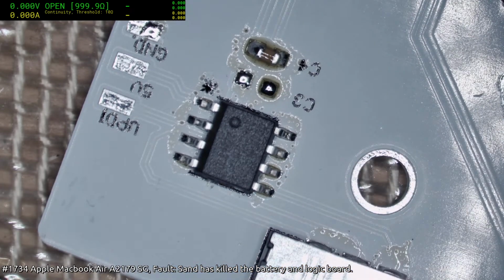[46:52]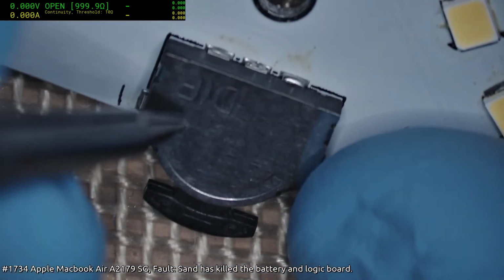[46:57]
Hey Cubby, yes, another day, another day.
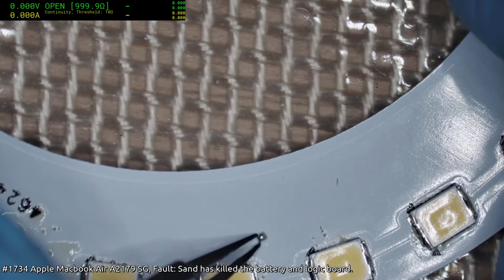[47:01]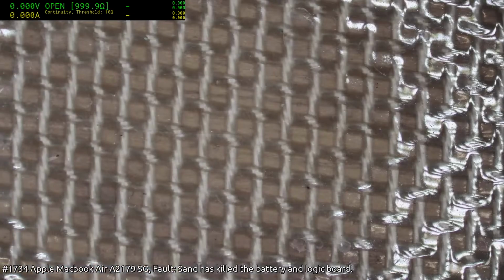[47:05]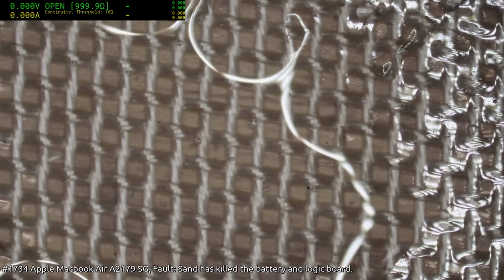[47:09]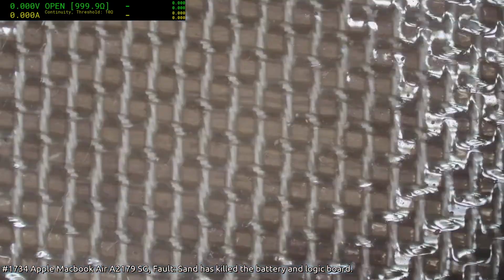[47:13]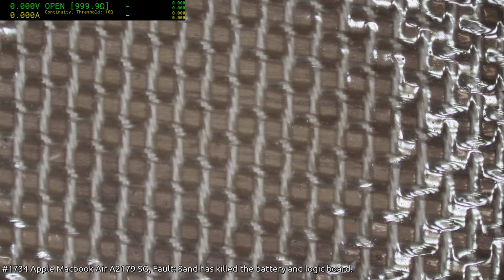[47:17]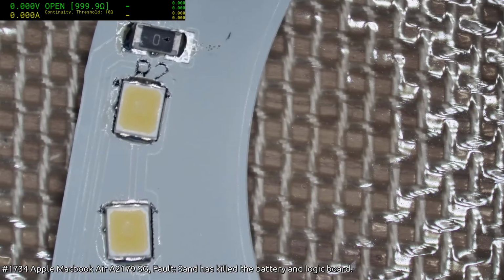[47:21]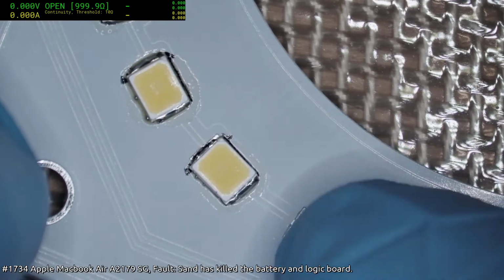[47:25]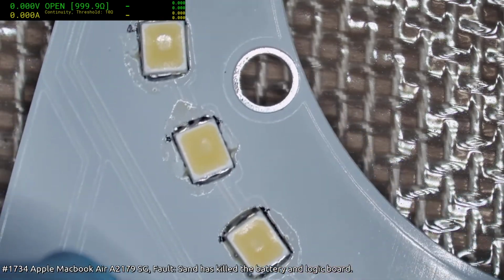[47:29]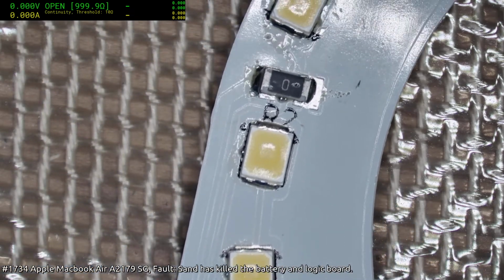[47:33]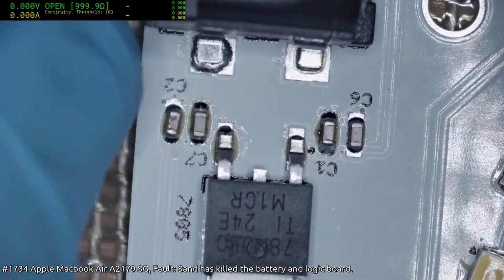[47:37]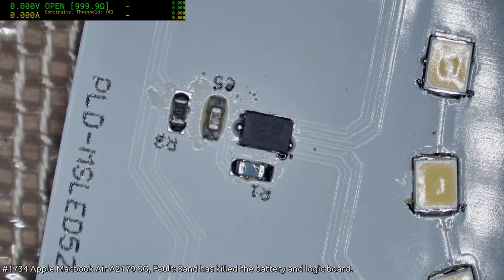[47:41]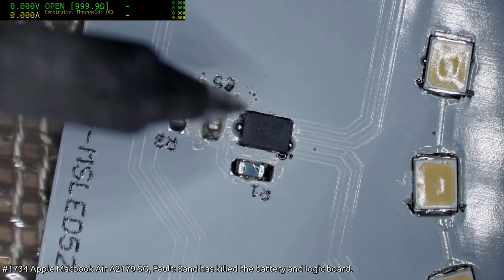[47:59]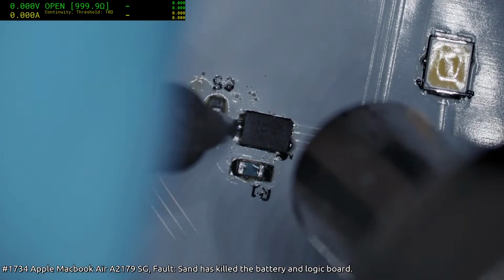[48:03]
If I could trust the manufacturer, I would get someone else to make these, by the 100 or 200. But I worry that they're going to screw me over by using different LEDs to what I spec. Because it happens. It happens a lot. And then you don't find out until too late. Substituting parts for things you didn't ask for is a time-honored tradition.
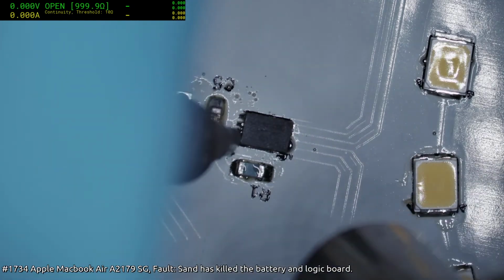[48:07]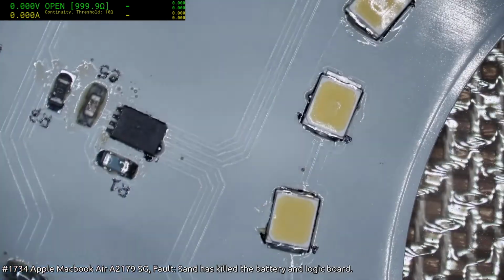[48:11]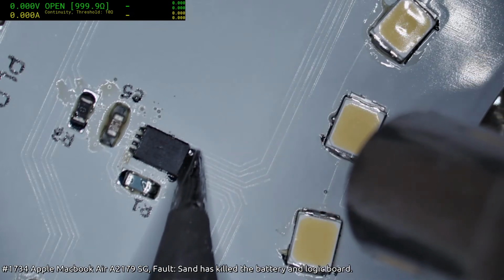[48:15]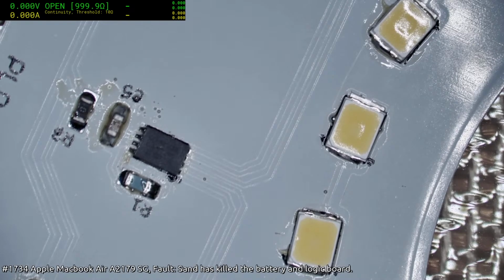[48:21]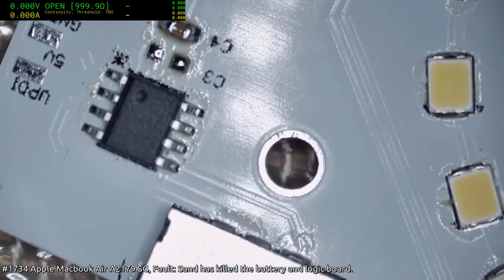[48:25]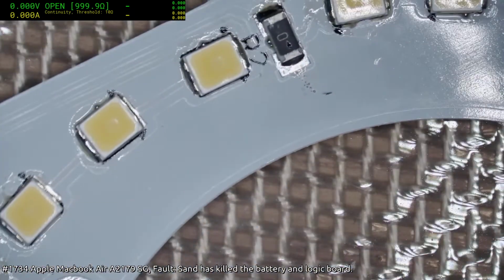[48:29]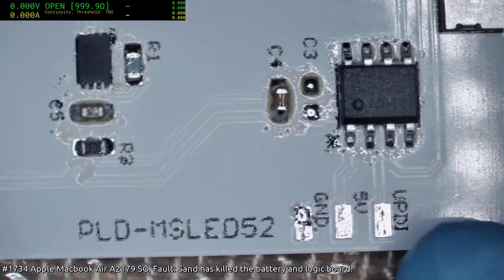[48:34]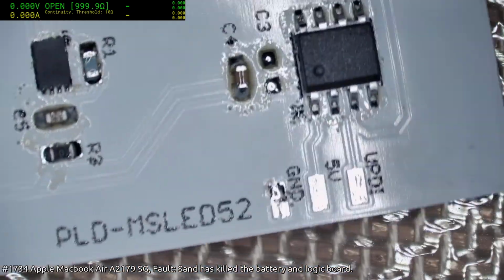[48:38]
I think we're good for a test. We do have to program this, and to do that we just put a 3-pin header across here and hold on.
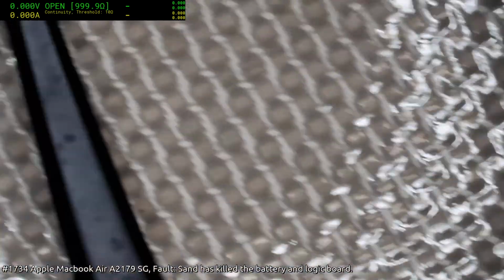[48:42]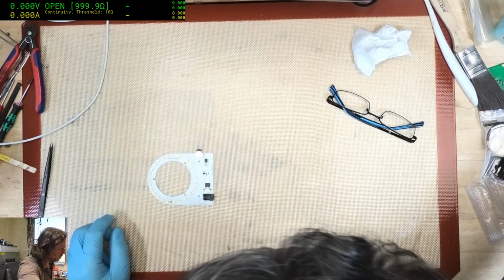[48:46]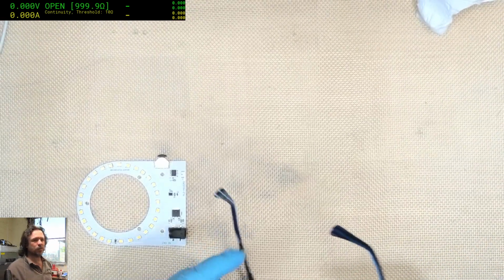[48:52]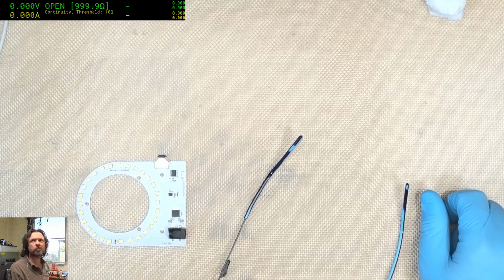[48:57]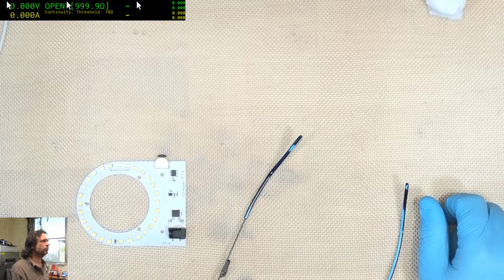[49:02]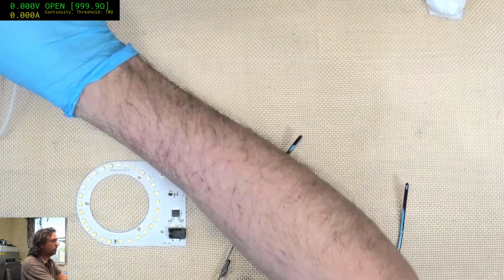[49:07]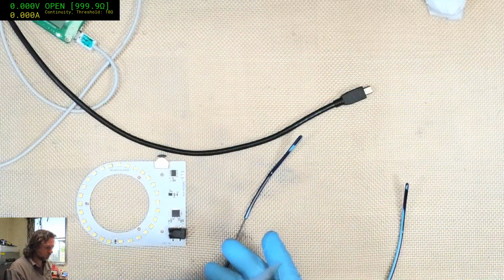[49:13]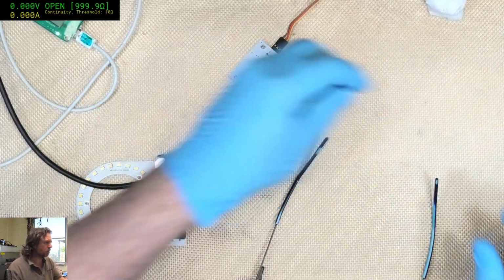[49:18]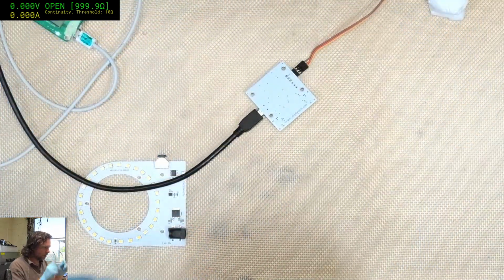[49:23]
Hey there, Pedro.
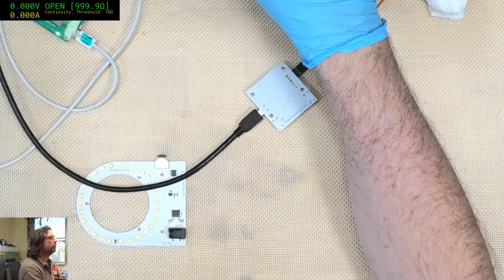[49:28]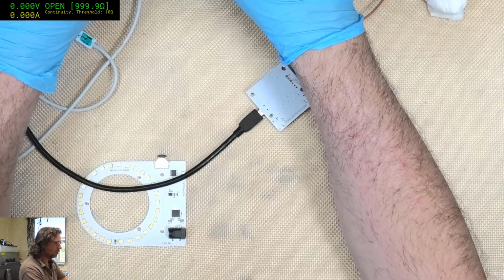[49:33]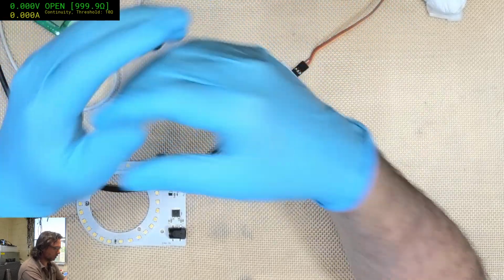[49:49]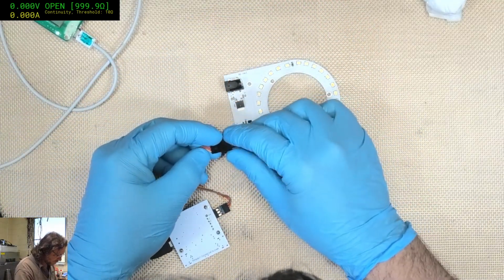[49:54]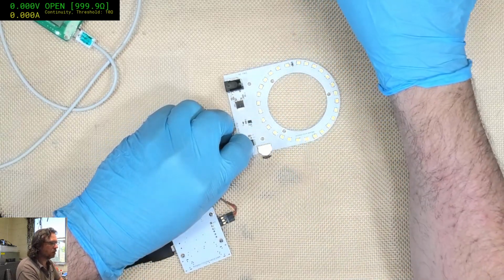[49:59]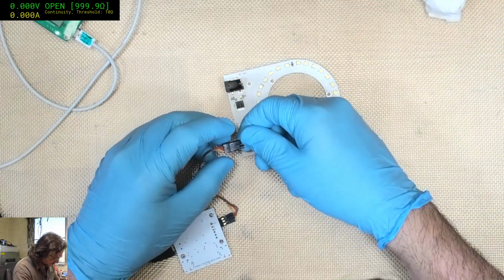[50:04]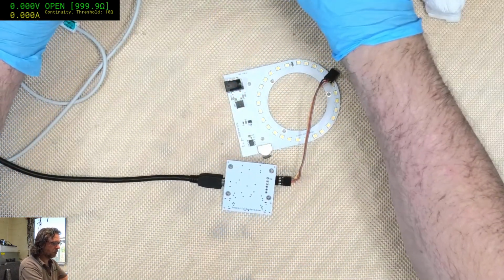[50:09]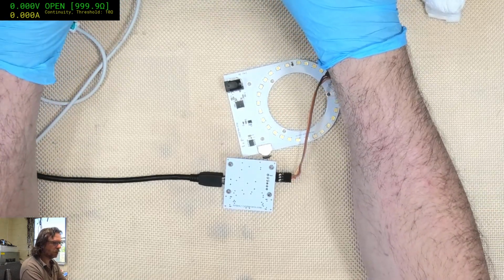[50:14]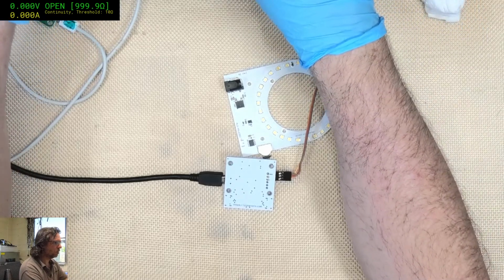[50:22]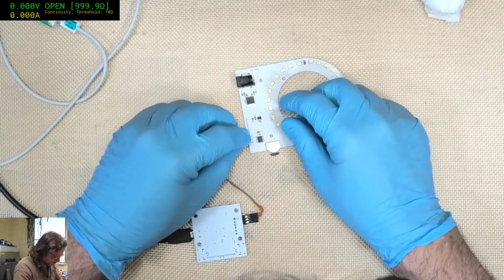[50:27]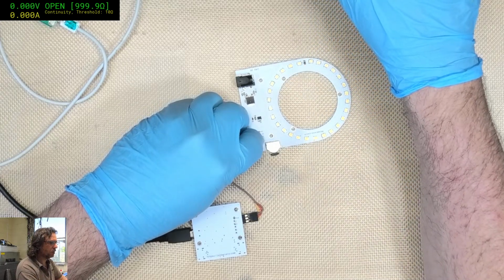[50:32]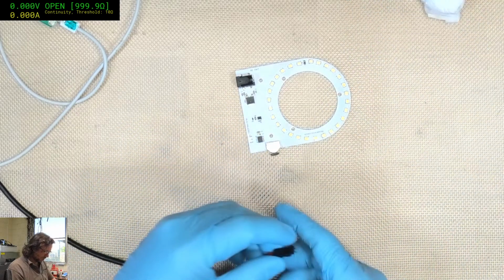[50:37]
Now to find my firmware folder. Looks like we might have what we're after. I guess we'll find out. USB 2. It helps if you tell it to program via the correct port. Okay, supposedly that works. I mean, supposedly that's done.
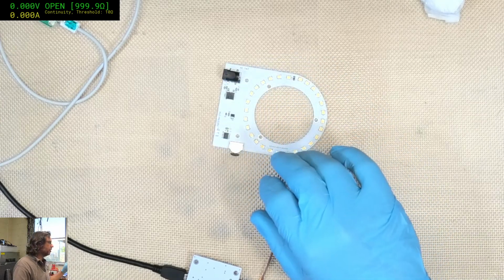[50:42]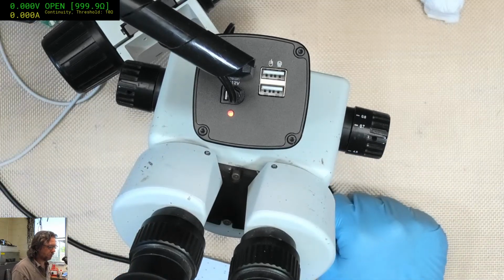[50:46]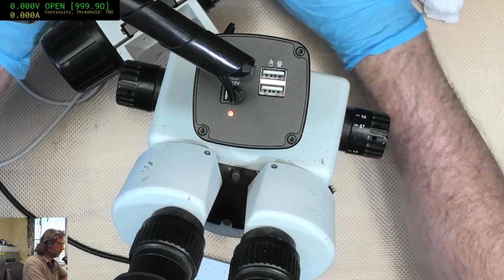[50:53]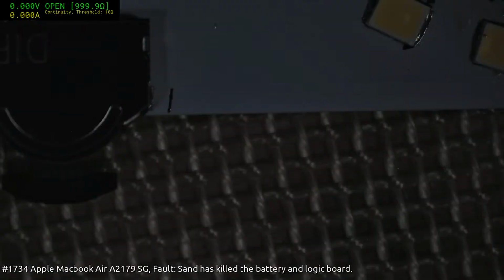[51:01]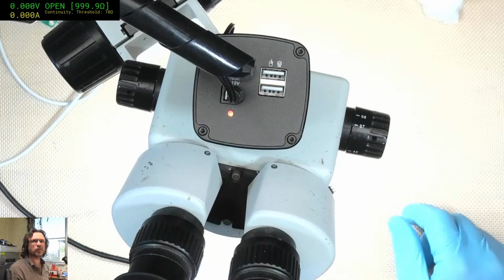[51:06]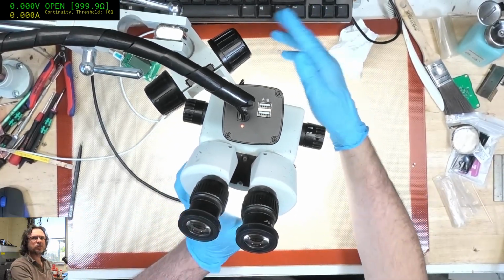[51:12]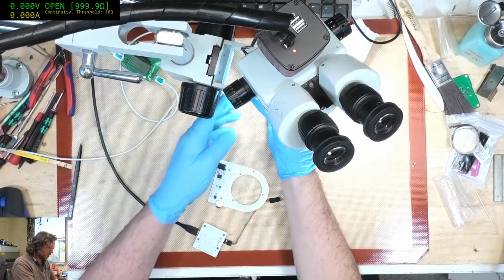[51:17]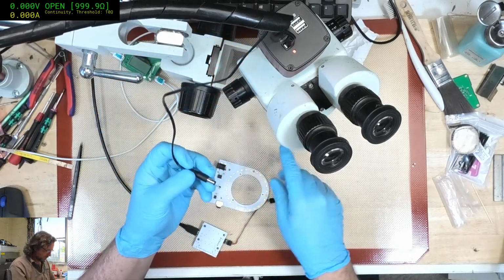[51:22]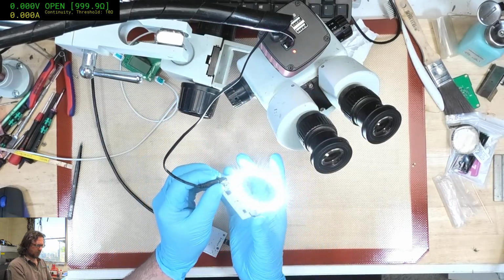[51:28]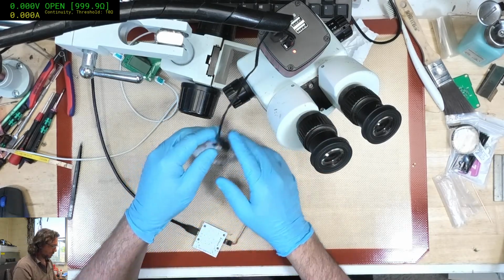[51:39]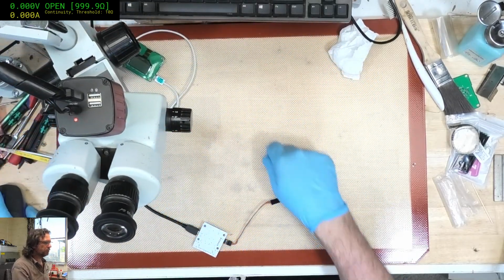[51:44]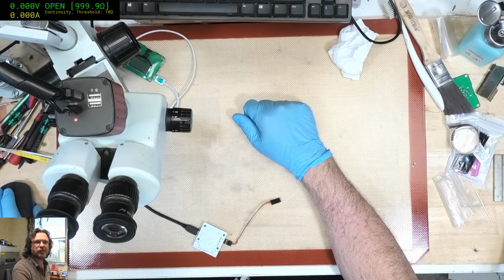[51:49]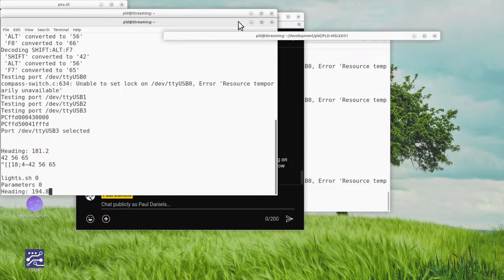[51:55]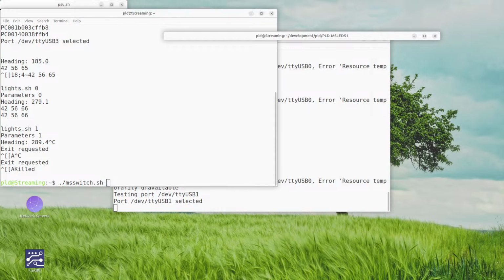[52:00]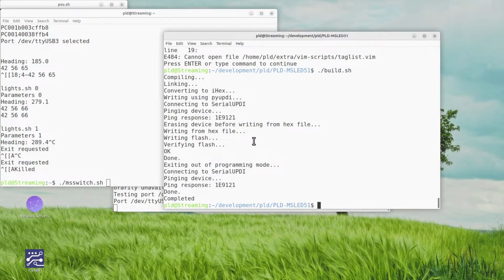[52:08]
Wow, you are crashing every 10 seconds. That's really messed up. Disconnect it from there. Hopefully. Yep. No, we've got the wrong firmware. Yep, we've got the wrong firmware on that one. I know, because the switch behaviors are different. So it's not 51.
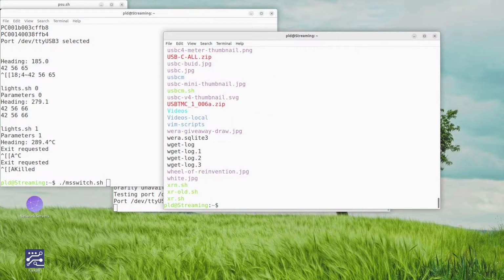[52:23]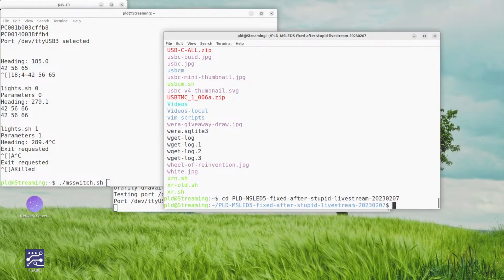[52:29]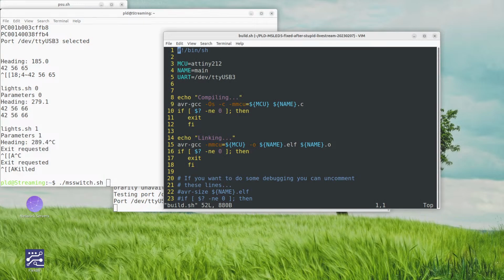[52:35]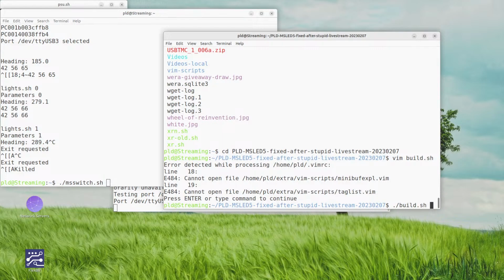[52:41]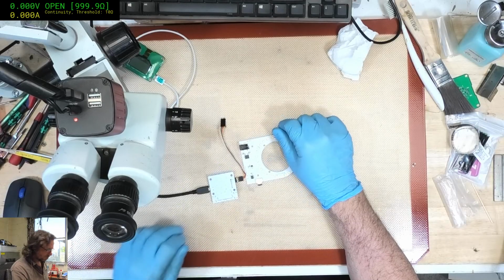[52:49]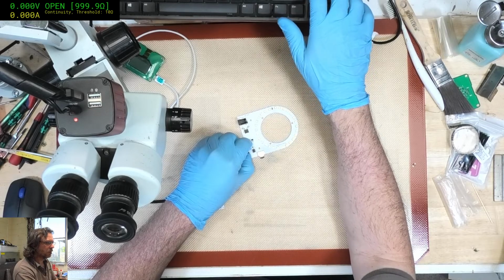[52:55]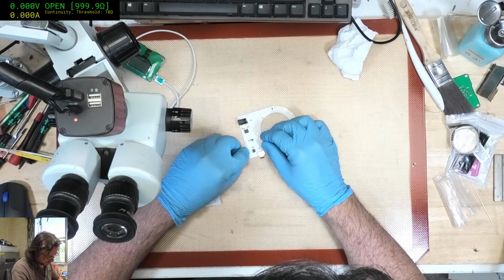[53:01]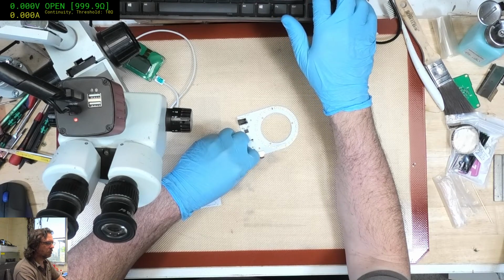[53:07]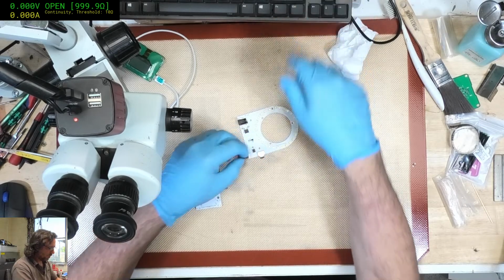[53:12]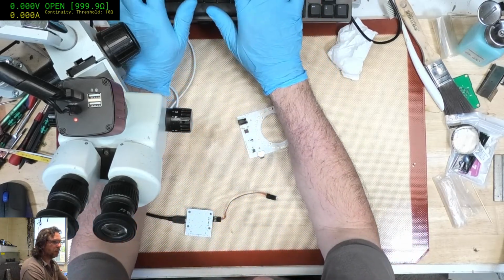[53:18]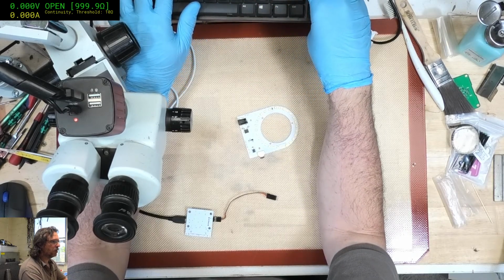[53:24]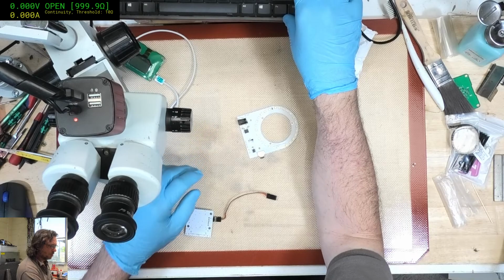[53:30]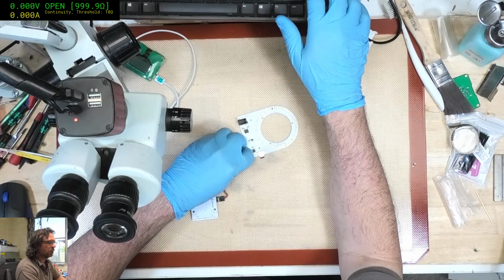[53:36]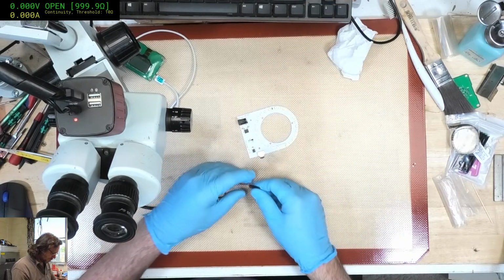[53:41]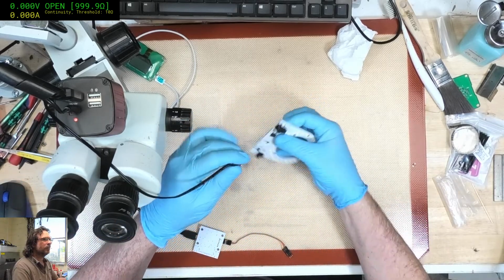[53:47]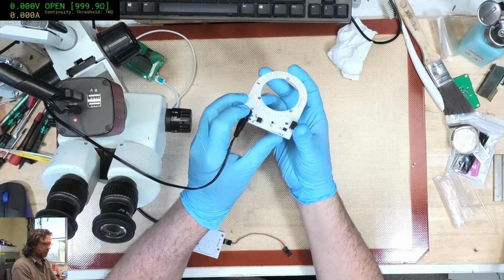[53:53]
This might be it. Ach. What's going on now? Is there no end to my agony? Okay, that's done. Okay, that's better. Yeah.
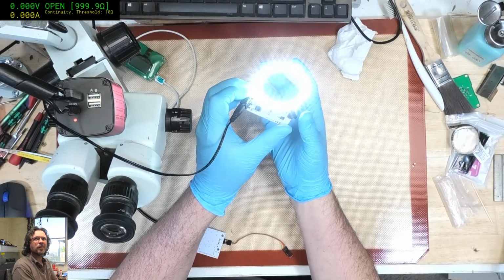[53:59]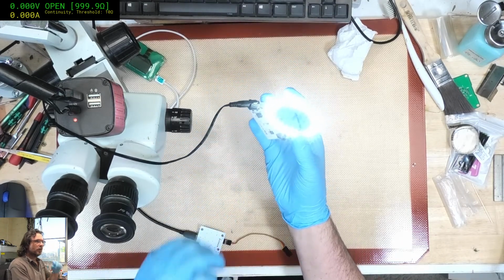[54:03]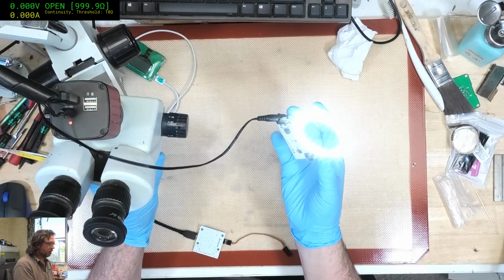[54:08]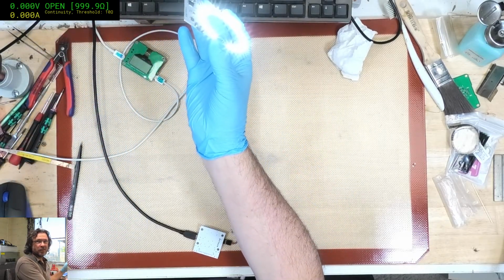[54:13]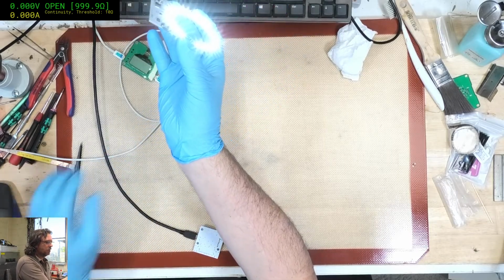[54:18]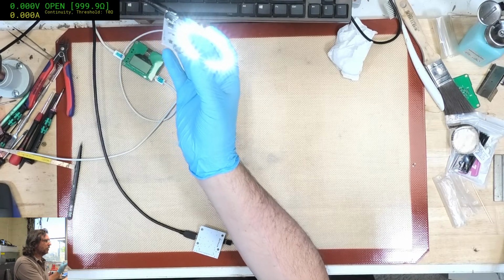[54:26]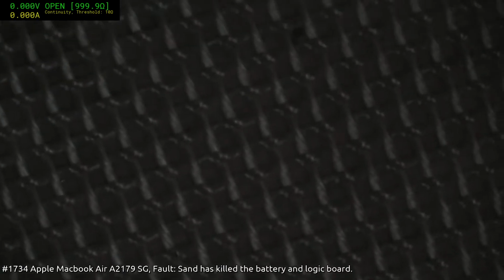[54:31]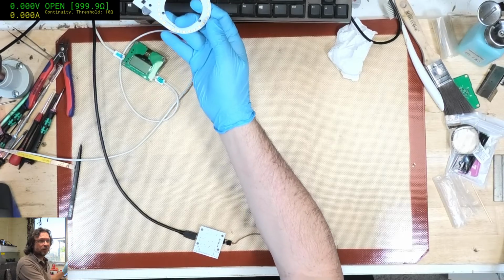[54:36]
Mohammed, yes, it's a very annoying keyboard thing. I've got to one day sort it out. Okay, so now this, if I swing it in, it should switch off. But I've probably killed the... Oh, there we go. Come on, switch off. And now it should be on. Let's try that off again. There we go. Yep, alright, so that's working.
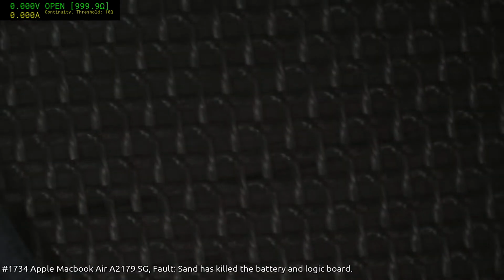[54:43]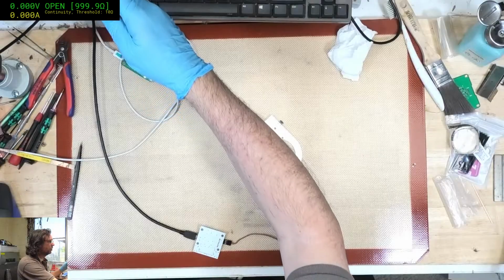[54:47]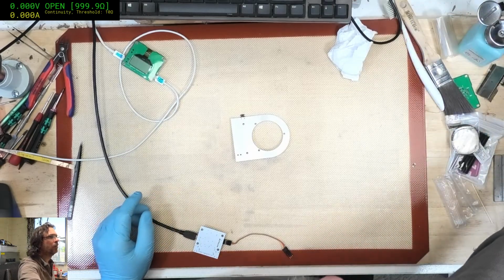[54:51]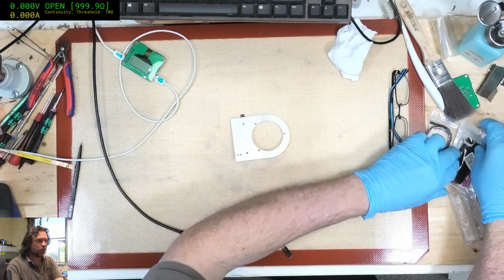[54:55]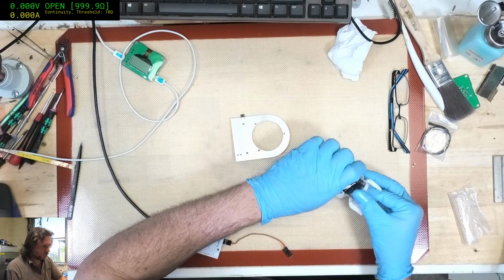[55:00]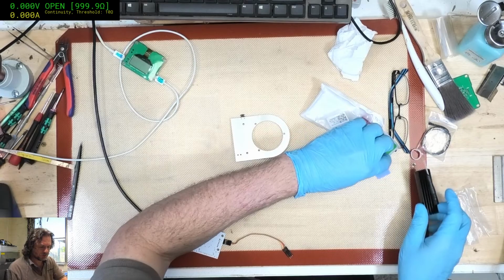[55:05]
A better chair. Oh, the chair's okay. The chair's a pretty good one. It's really more a problem with the keyboard. It needs to be moved over to here on the side or something like that.
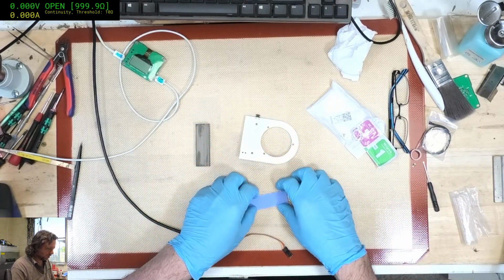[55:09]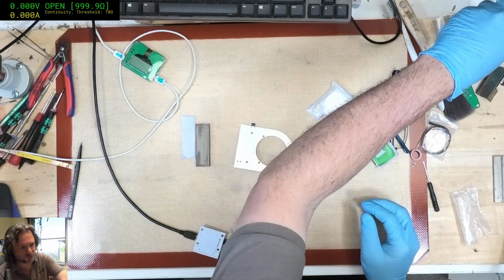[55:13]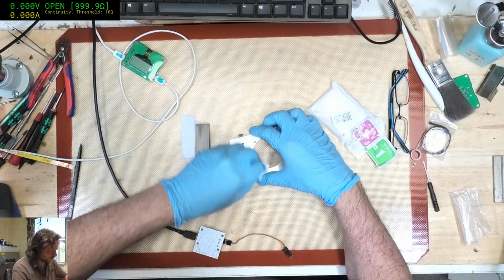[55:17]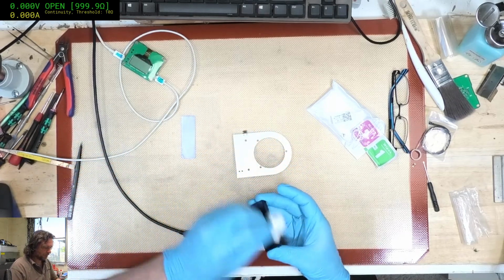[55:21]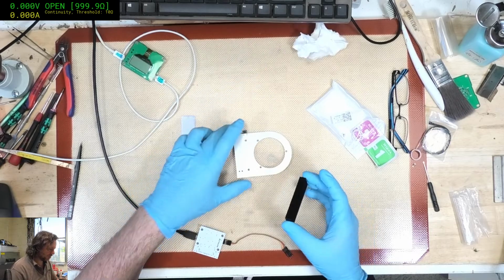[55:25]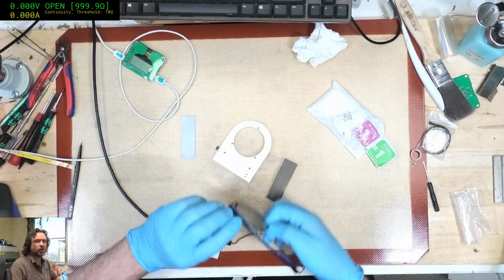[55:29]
Okay, one thing I have found with this heatsink and material is that I actually don't really need to screw it on. It's sufficiently adhesive on the first application, as long as you clean it. And given that it is being held by gravity, it's actually very difficult to remove the heatsink once I apply it.
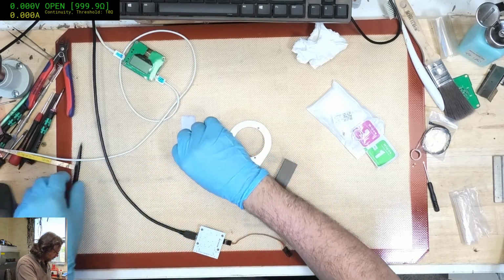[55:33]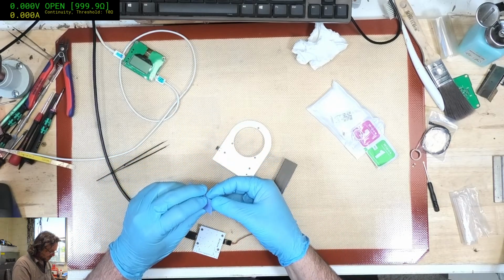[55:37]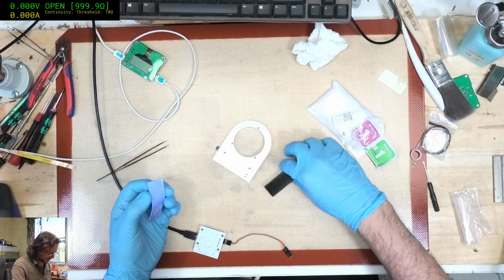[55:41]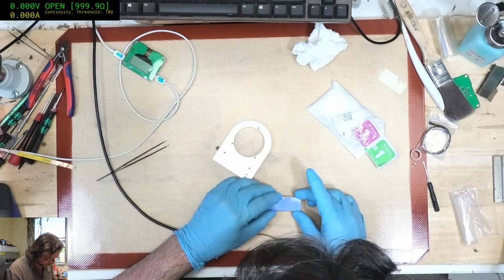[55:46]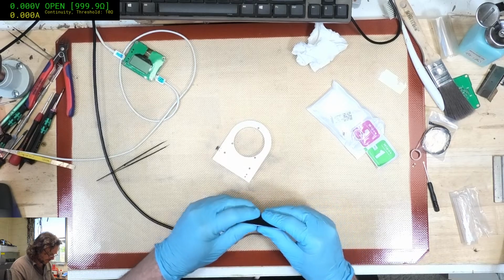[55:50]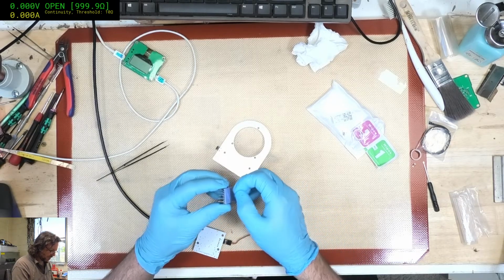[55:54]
The only problem with this chair at the moment is, of course, that it does sag. It's just a classic leaky, what do you call it? Leaky piston thingy-majig, gas lift, or something like that. Anyway, it doesn't catch me out too often.
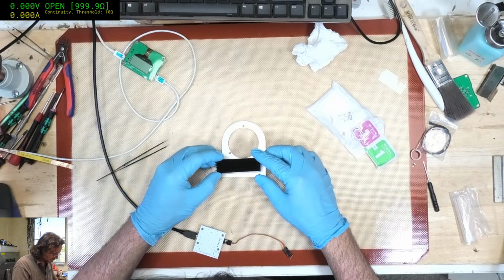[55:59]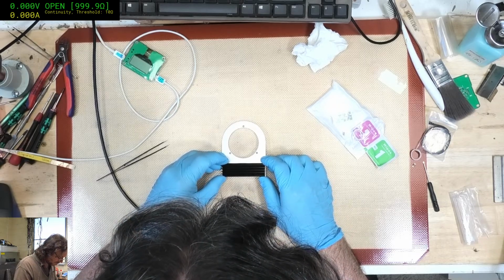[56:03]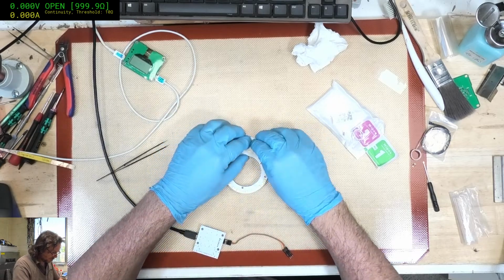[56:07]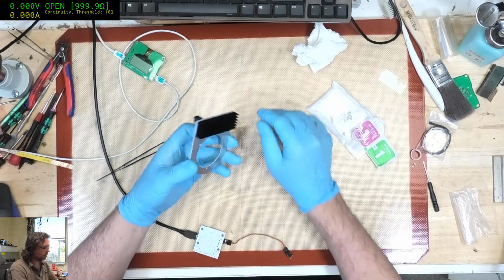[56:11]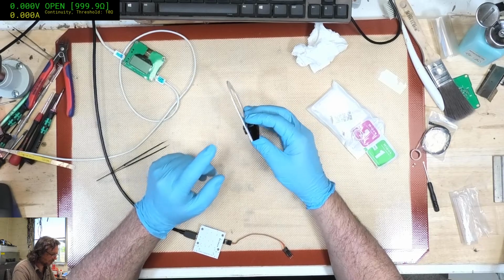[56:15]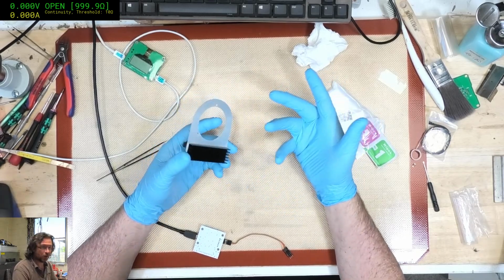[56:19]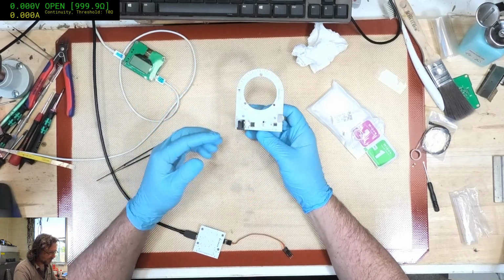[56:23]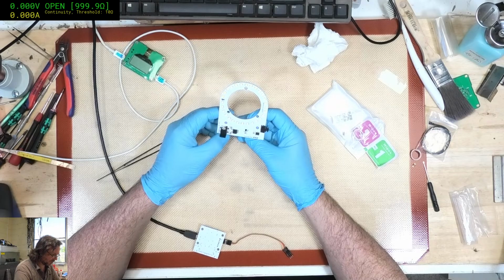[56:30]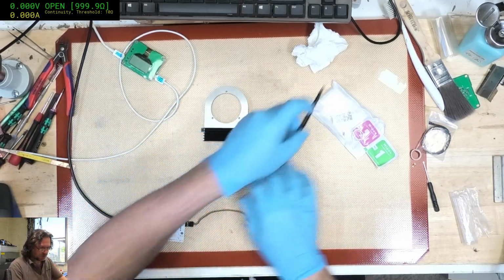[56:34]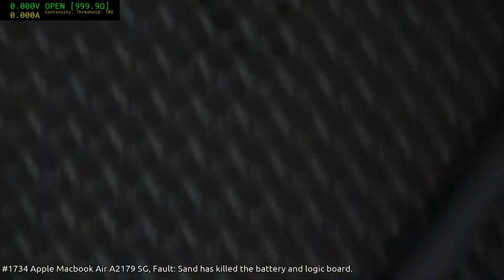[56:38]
There we go. And that's that. Now, you're probably saying I really should have a heatsink around here, and I concur. It would be nice to have some sort of finned circular thing. But given that it's an aluminium board, a fair bit of the heat does get down to here, and we're protecting the actual circuitry here. Anyway, so that's done. Let's plug it in, let's install it, and it should be absolutely no difference to the existing one.
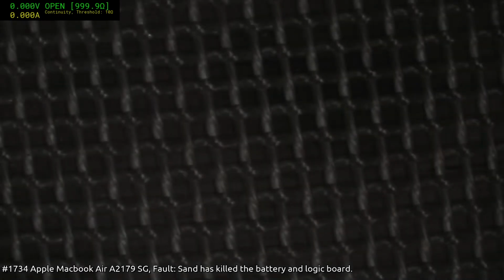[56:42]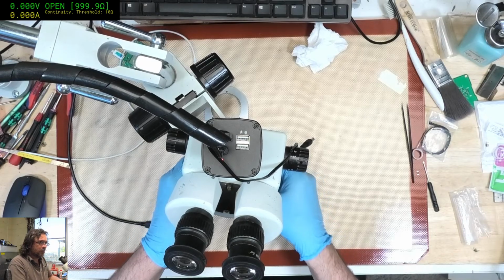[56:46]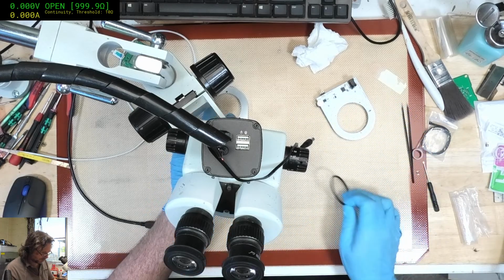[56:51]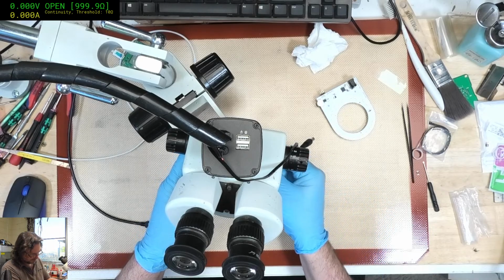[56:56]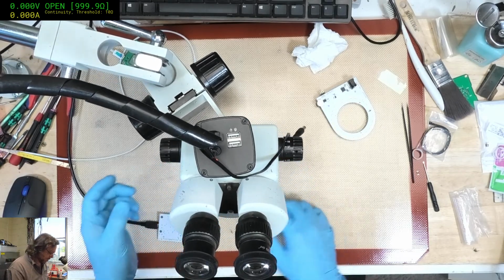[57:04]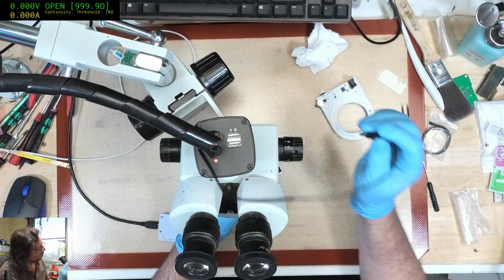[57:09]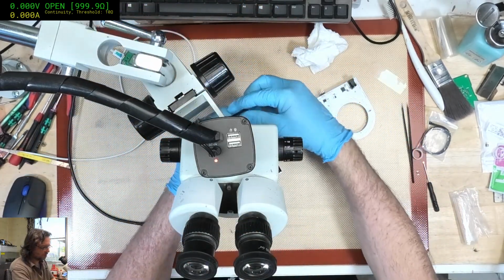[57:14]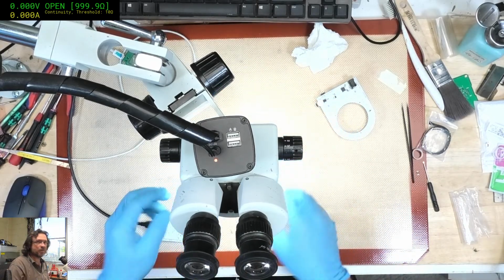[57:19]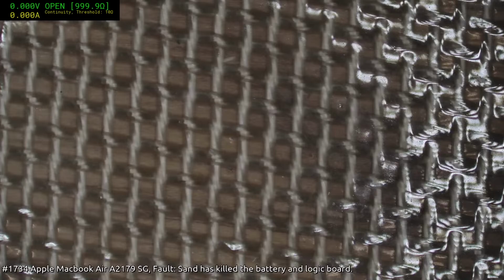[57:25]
Oh, pain, man. That really hits in the feels, man. Okay, put the O-ring on. I'm using an O-ring at the moment because, well, it's an easy way to install it. Okay. Switch to the microscope.
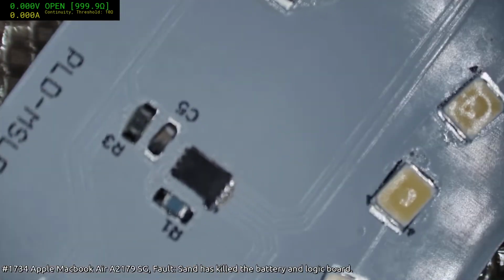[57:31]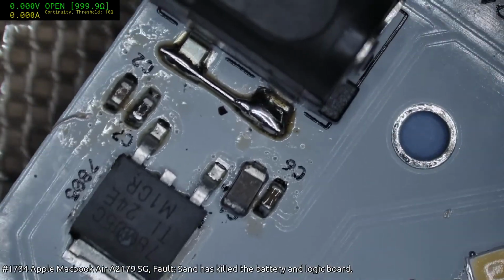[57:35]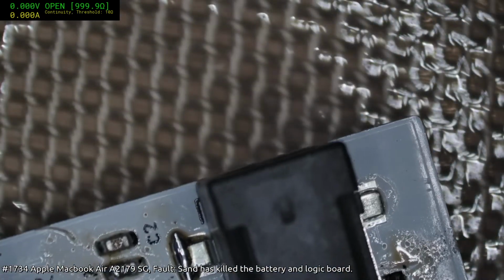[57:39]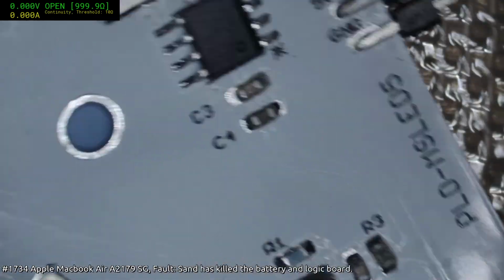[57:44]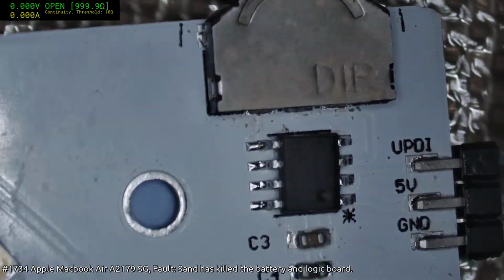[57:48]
The sliding drawer I have tried, and I end up breaking my kneecaps on it too much. So I think really just a complete rework of the workshop. But yeah, it definitely needs to be repositioned because it genuinely makes it uncomfortable for me to work in here for anything other than just board repairs.
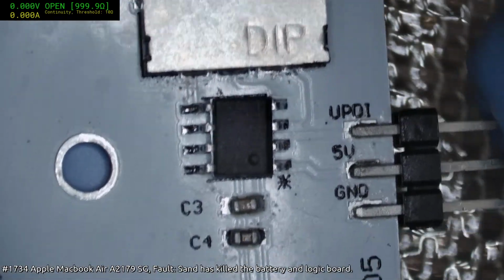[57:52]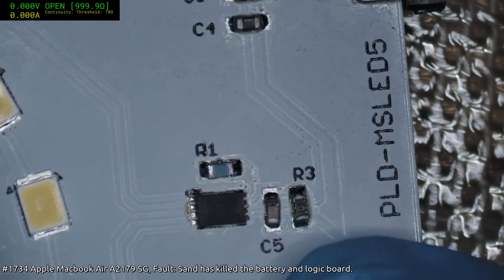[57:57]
Well, that's a really shoddy job on all this. That's the joy of my own prototypes. They're complete crap. That looks really bad because I had that orientated the wrong way with the previous build. That's what I was talking about before.
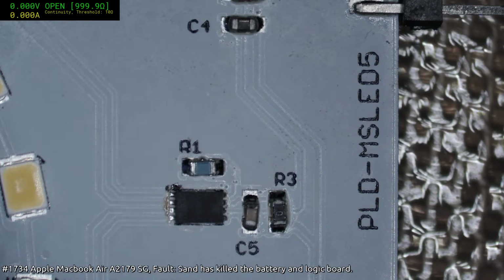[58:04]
You donated, therefore you can insult. Oh.
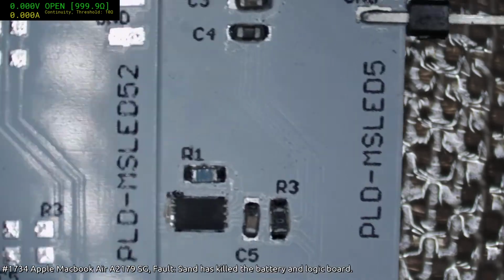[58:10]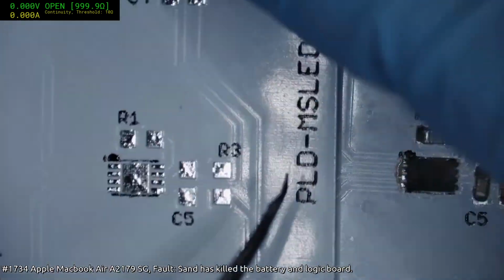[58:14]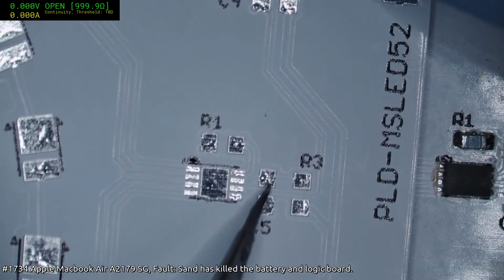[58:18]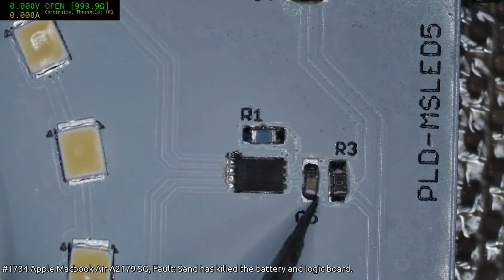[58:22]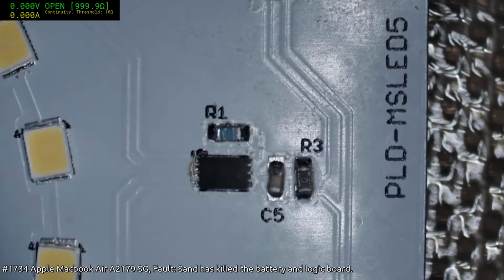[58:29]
See if you compare the gapping here. So when you look at this gapping, it's more clear that that is the orientation of the parts. But when you look at this gapping, they're all square set, so you don't know whether it's meant to go left to right or top to bottom.
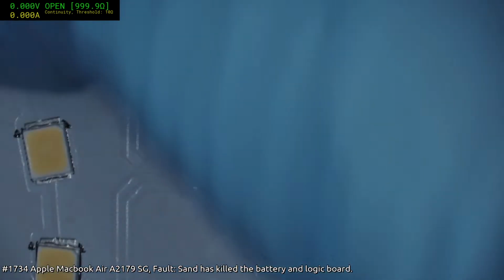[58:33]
Yeah, The Apprentice. Yeah. What else was I going to say?
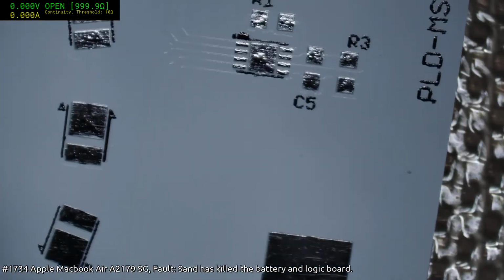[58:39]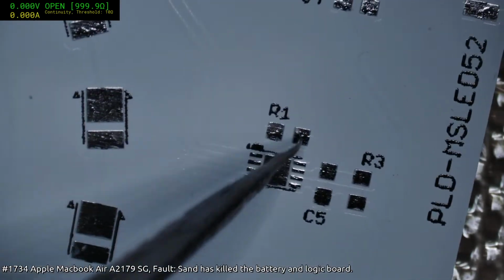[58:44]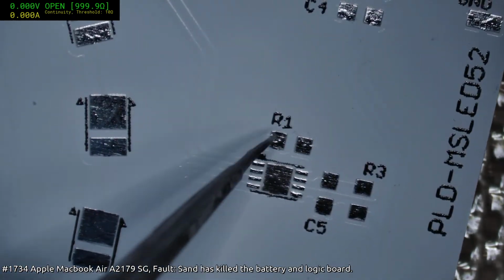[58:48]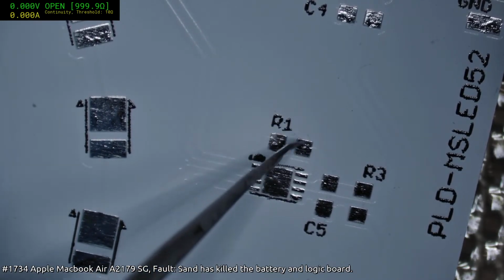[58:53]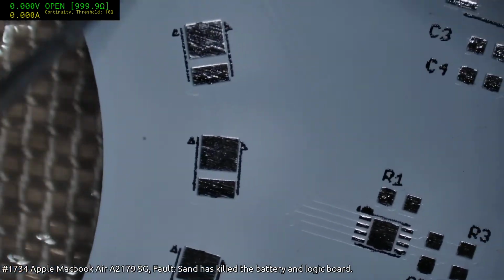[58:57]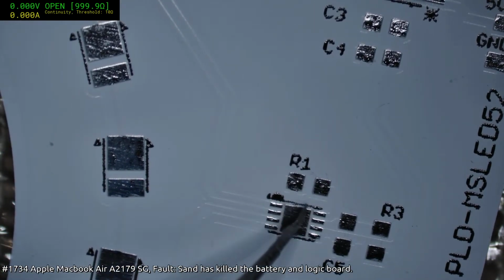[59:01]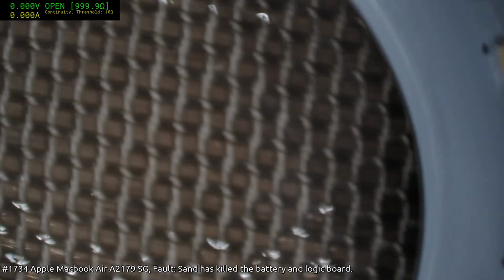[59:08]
There's a couple of tweaks I could, like if people want even more brightness out of this, you can change that resistor there, which is at 806 ohm, I think. You can lower that resistor down to around about 790 or somewhere between 790 and 800 is the peak, and you will get a bit more brightness out of the LEDs. To be fair though, that tiny extra 1 or 2% in terms of human perceptibility, it just isn't really worth it. All you're doing is creating a hell of a lot more heat for no real gain.
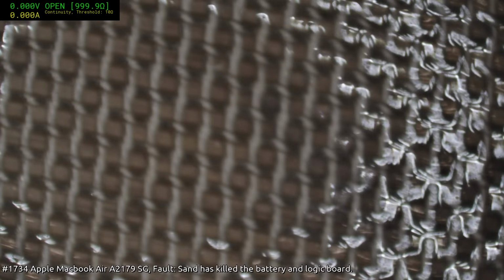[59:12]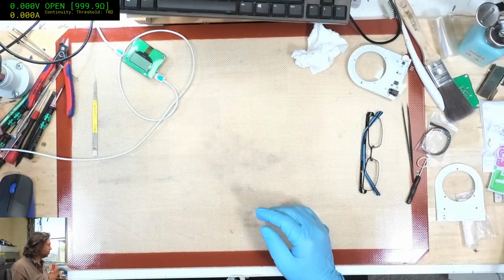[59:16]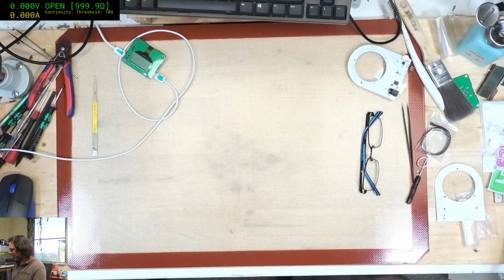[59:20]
Alright, and that is pretty much it. I do need to change an iPhone screen, so I probably should do that. Yeah. Well, I've got all you victims here. Where are you, iPhone screen? Ah, this is a Pro Max. Yuck.
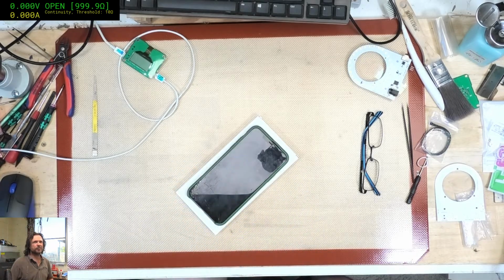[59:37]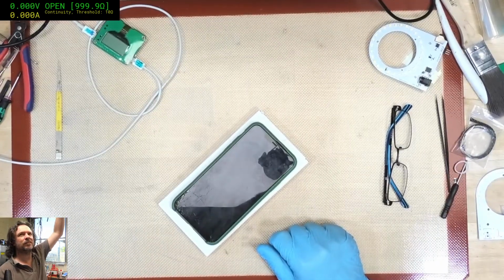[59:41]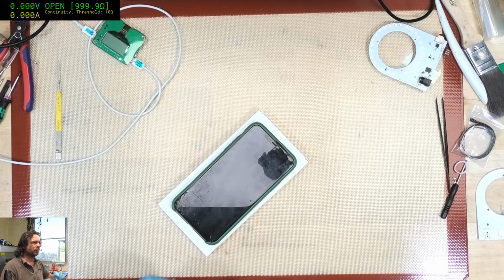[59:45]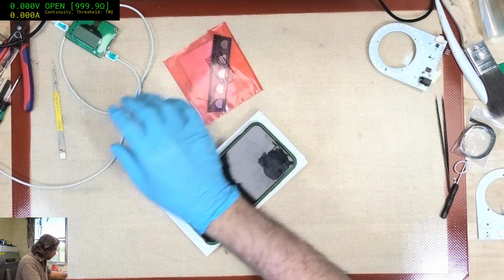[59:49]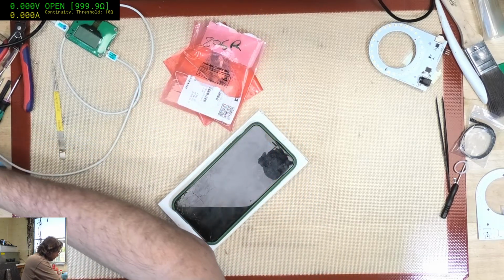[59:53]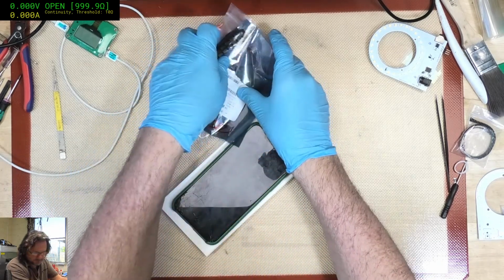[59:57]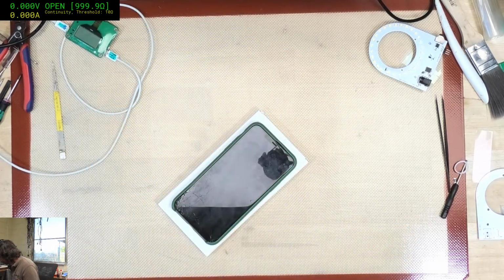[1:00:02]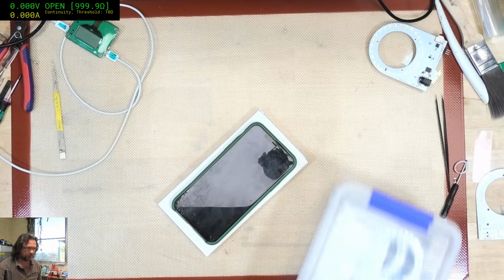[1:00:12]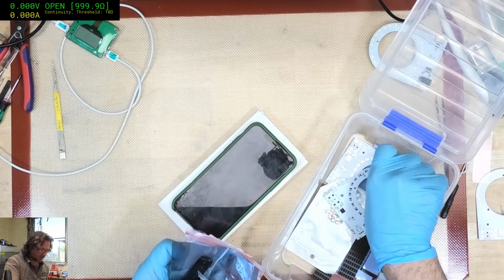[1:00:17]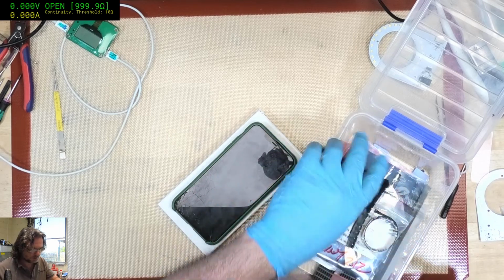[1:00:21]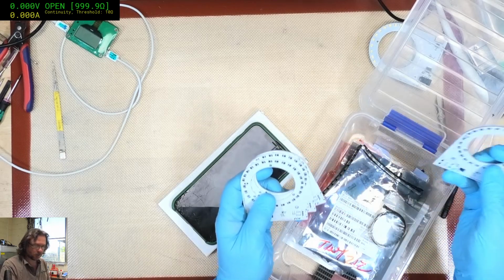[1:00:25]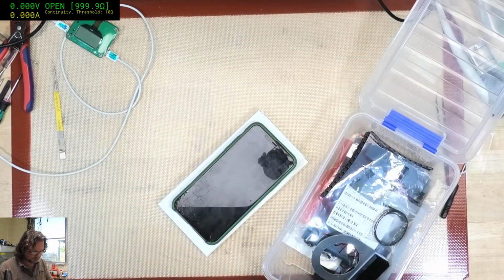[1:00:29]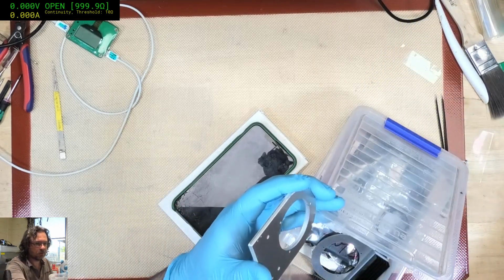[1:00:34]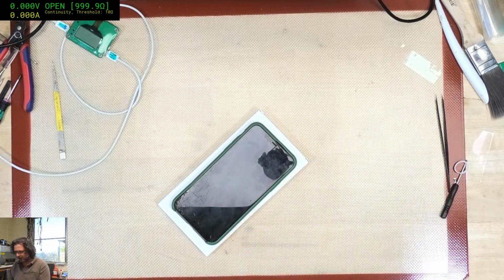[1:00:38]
Actually, I should also put away all the parts. Put them away, put them away, put them away now. So I don't come back later and go, where the hell are these parts? And I also need to get rid of all of these dud boards. You're a dud? No, you're a good one. And I'll throw this in the prototype bin. Oh. So these are the good boards now. So yeah, I think I'll get a run of 100 or so of those done. Finally I'll be able to get some sort of discount.
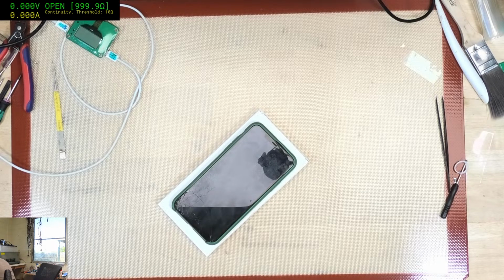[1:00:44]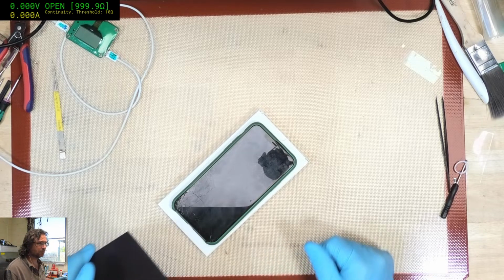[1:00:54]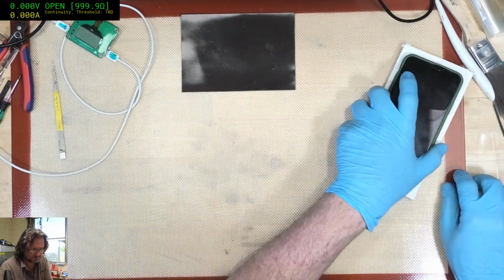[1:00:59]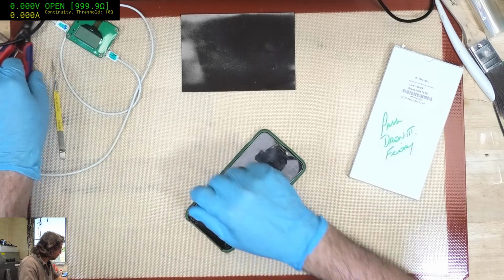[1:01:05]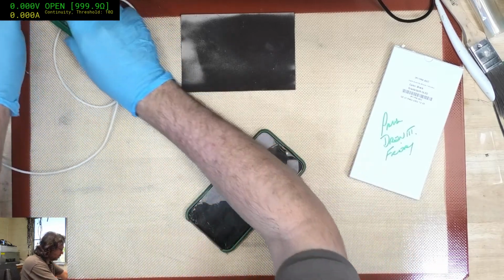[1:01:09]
Hey there, House Moth. Basically it's just a microscope ring light, that's all. And it addresses the issues that I encountered with the sort of traditional Amscope ones.
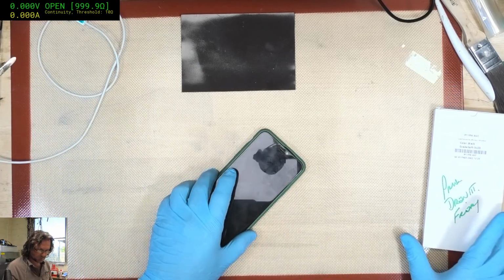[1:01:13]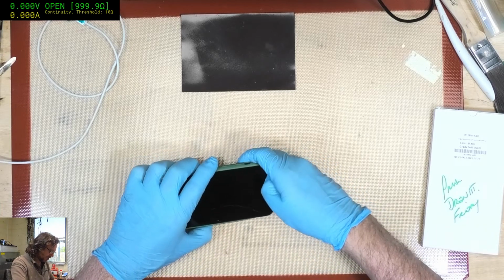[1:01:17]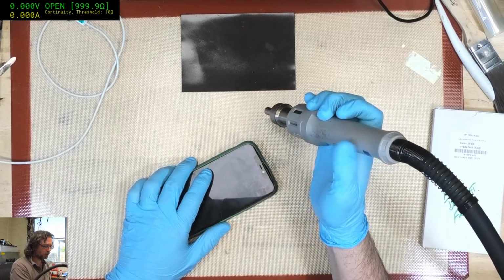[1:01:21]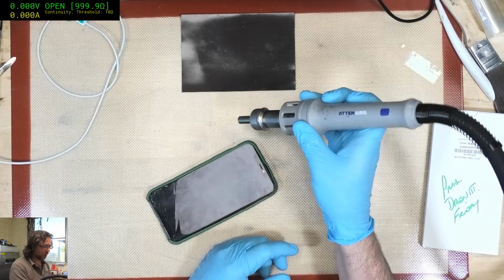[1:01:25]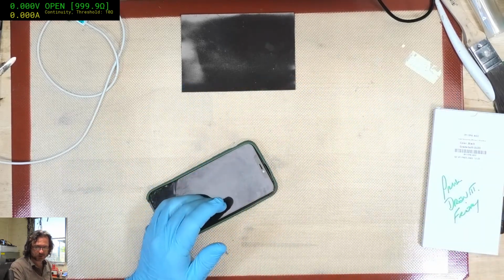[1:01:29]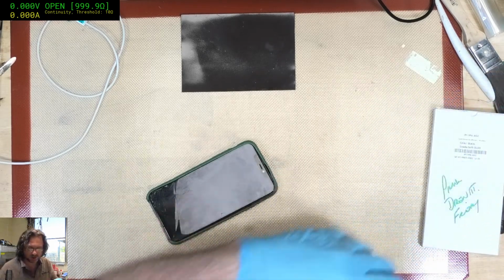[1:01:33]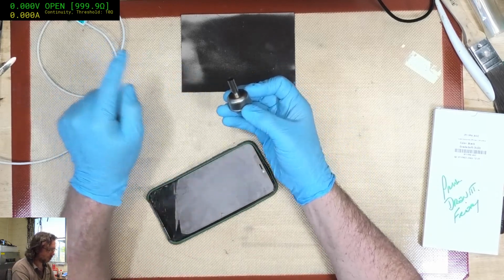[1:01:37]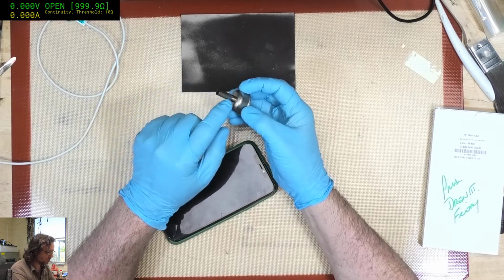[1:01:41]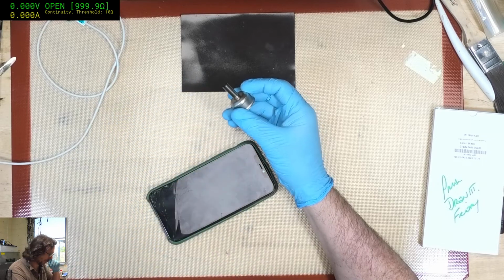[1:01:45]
The two main factors that I ran into was that when you use your hot air wand, the traditional ones are just so wide that you really can't get a good angle on your board. Hence a lot of people would use angled tips to compensate for that. But I don't like angled tips because they do them poorly, because they just insert these at an arbitrary angle, be it 30 or 45, rather than the proper way, which is to actually fill it with sand or something like that and then actually put a curvature on it.
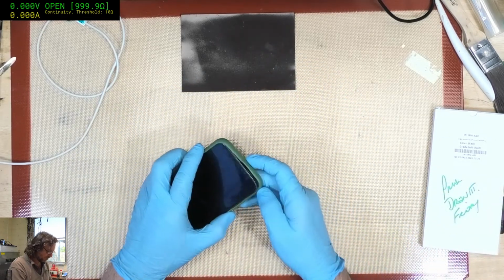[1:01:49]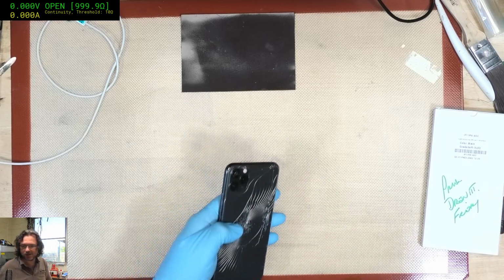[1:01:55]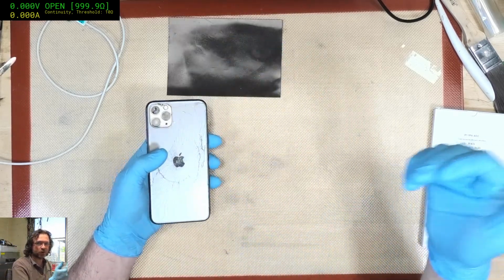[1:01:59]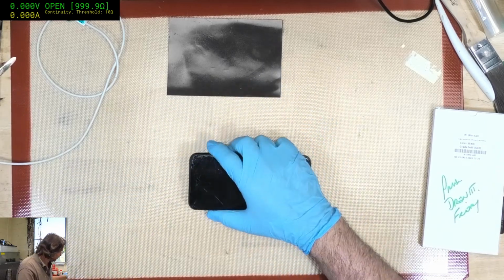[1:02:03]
But aside from that, the color rendering from the cheap LEDs that they use is pretty awful. Particularly, you notice it more when you're doing video recording. And I thought, yeah, that's it, I'm just going to do my own.
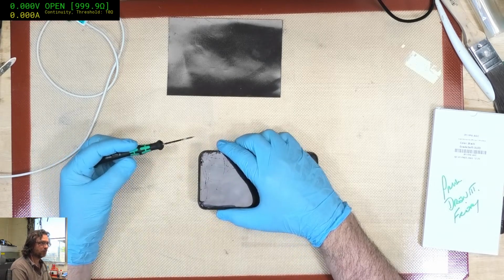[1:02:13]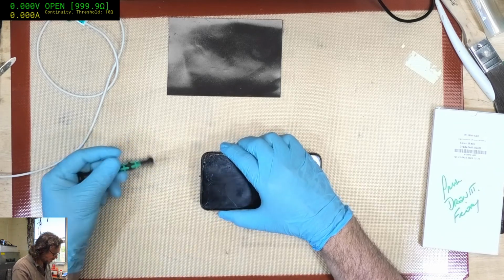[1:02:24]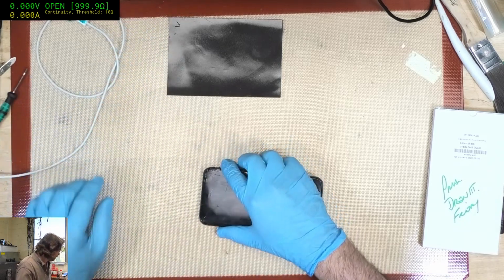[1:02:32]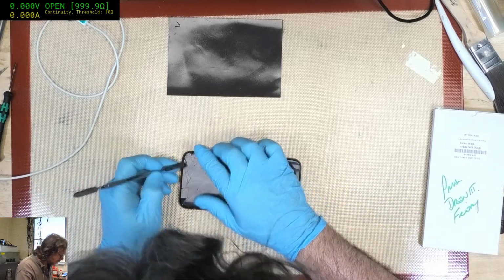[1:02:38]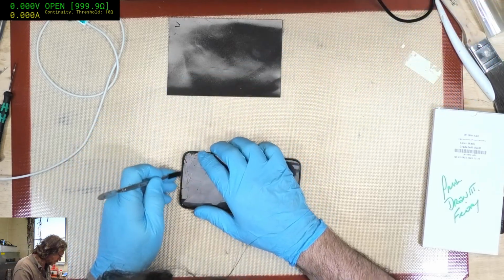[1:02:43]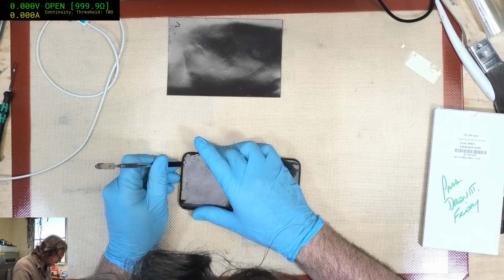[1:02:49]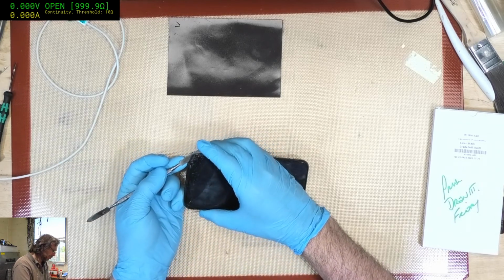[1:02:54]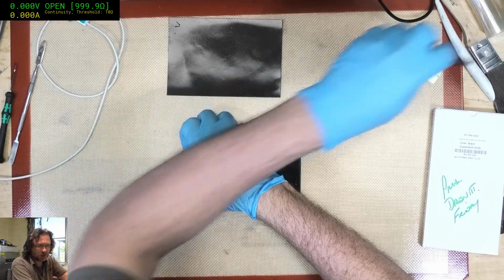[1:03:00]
I mean, they're probably, in terms of actual lumens, not too dissimilar. But in terms of color spectrum rendering, the new ones are definitely superior. But that comes down to the LED itself, of course, which takes me back to why I'm very disinclined to have someone else manufacture these, because they will most likely skimp on those LEDs. They will find something that's got perhaps the same Kelvin rating, and they go, "Yeah, that's all you need," and the same lumens output. But it's not going to work, because you need that spectrum broadness.
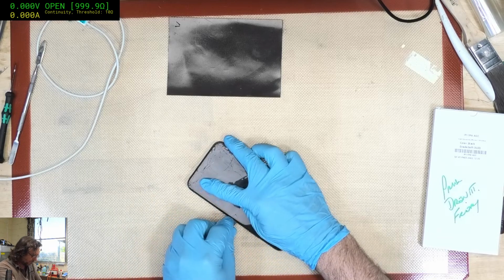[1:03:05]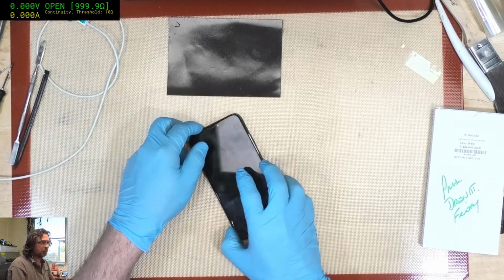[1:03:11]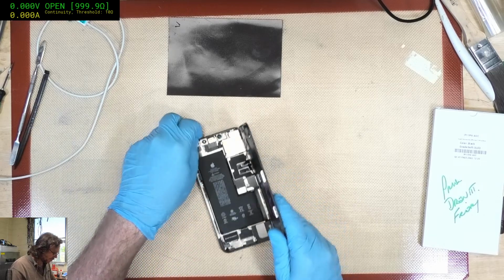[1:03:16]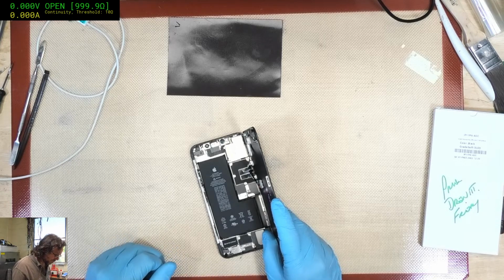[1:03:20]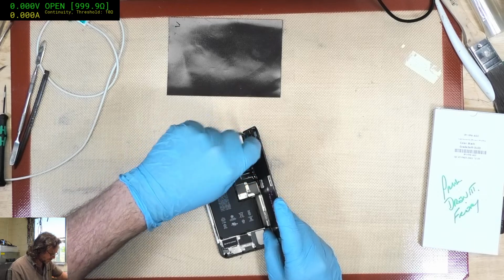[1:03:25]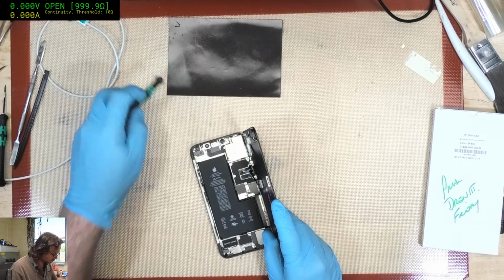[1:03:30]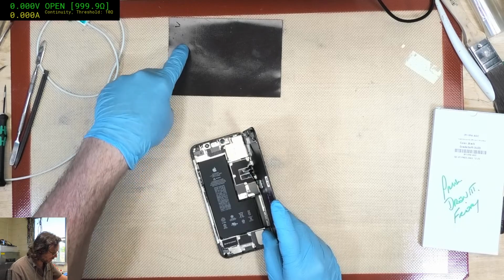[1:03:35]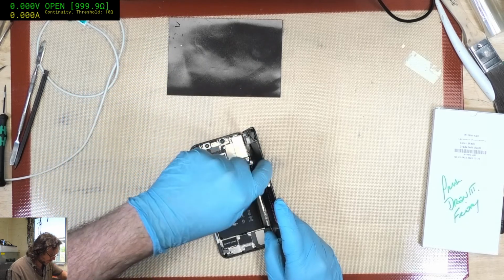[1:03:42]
The compass sensor thing, that's a secondary couple in. Obviously it's not on the board itself. It's just a case of utilizing data that is being fed to the PC already and making it switch the power source to the microscope light on or off. I do have a new board coming for that power switch, because if you watch that power switch video, you'll see that I kind of had to bodge my way to a solution.
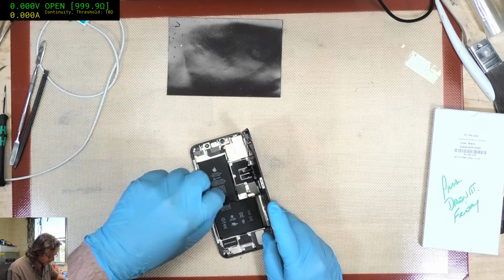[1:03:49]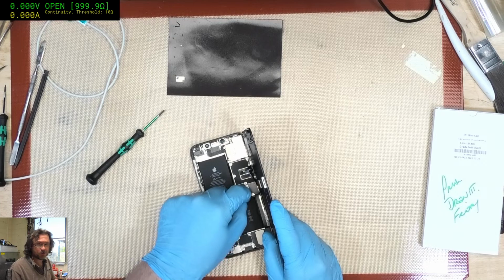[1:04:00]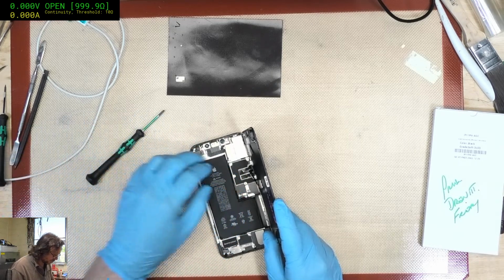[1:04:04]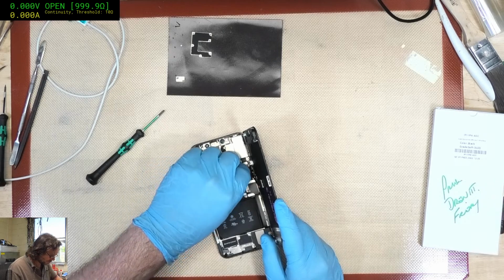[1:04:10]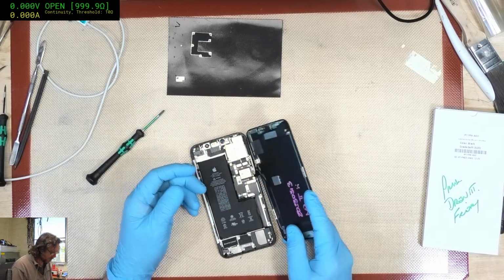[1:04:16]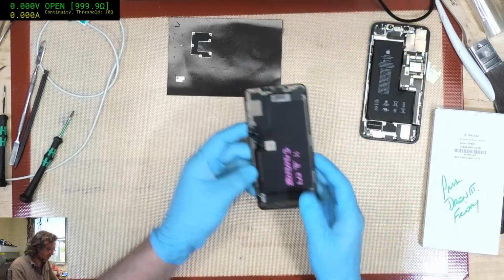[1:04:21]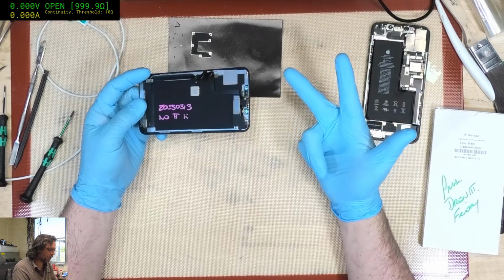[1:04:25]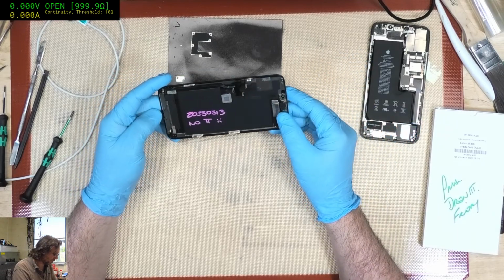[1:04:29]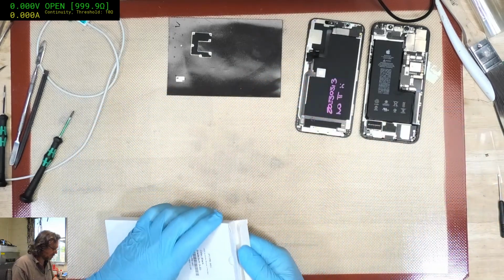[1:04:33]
Now the only downside with the new board is that it's still using the AT-Tiny 2313, which is a very old controller, but it's one that I've got the software for and it works, so I'll continue to do that until I can find maybe someone's got an equivalent functionality with a Tiny 45, or I would prefer maybe a Tiny 412, something more recent. Because the Tiny 25, 45, 85 chips, they're getting old now too. So the 2313 is even older still, but at least I can still source them.
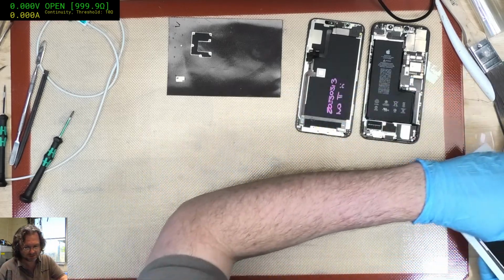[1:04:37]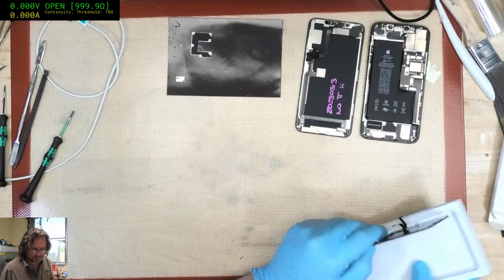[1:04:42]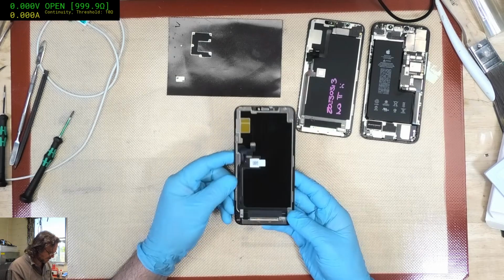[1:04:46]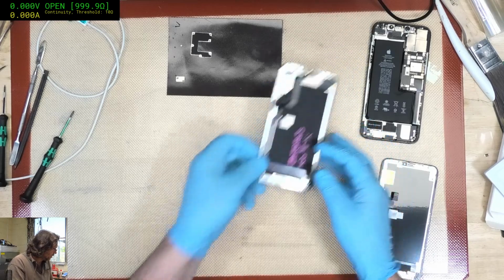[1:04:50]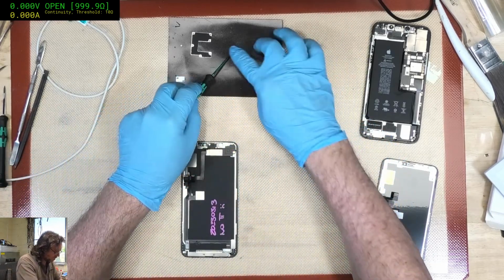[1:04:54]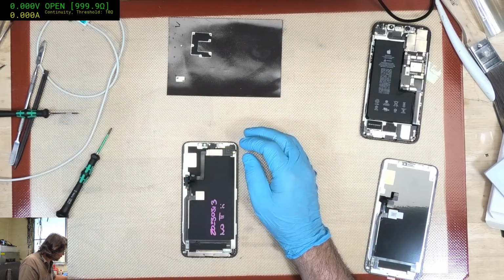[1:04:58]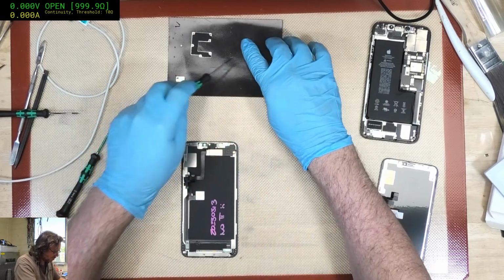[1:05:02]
Okay, so I've got no TT on this one. That's going to suck. Oh well. I guess that's one less step for me to worry about. I do not have the equipment, software or whatever set up to be able to regenerate the true tone based on the serial number of the device, etc.
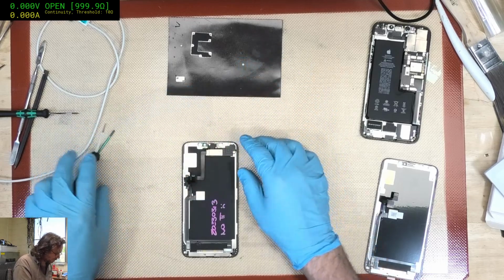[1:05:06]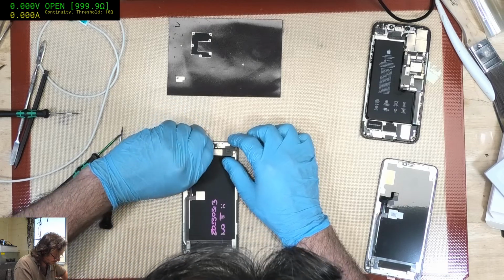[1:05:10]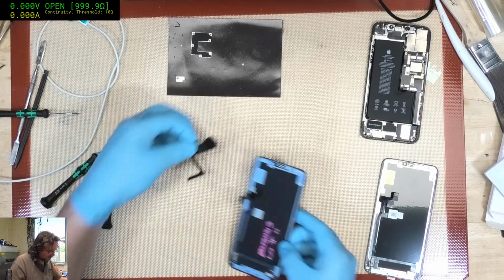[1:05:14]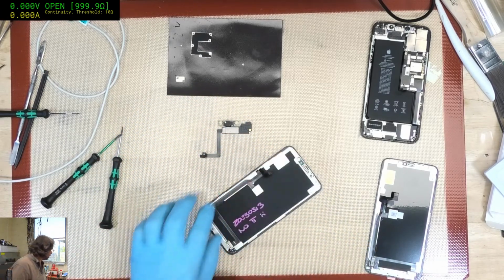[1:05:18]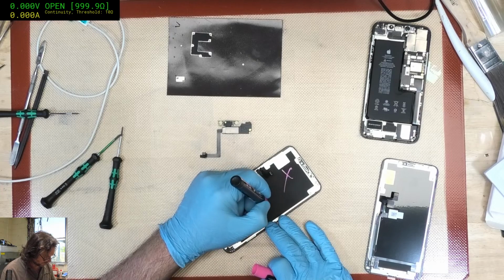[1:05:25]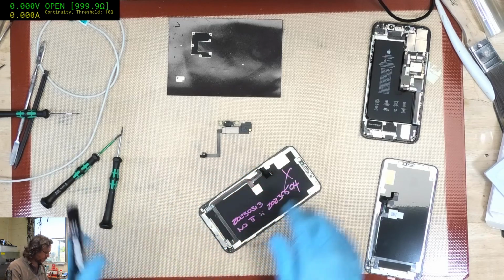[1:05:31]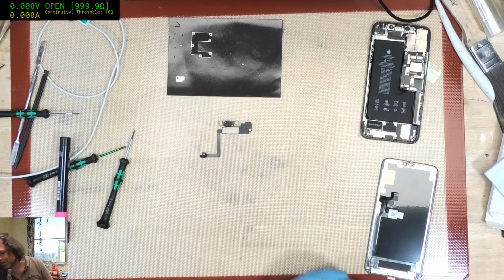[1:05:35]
Oh, whoops. Better mark the date of extraction. Was it 0504? Yep. So let's see how long this... Didn't even last them 2 months. Blimey heck.
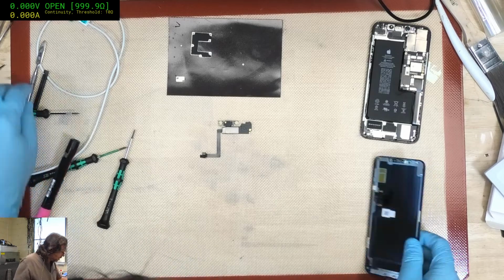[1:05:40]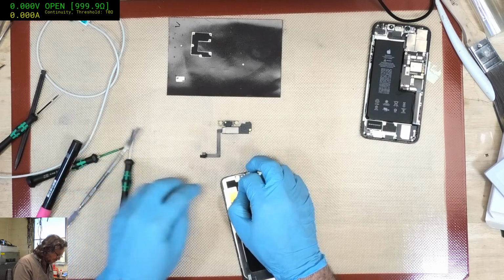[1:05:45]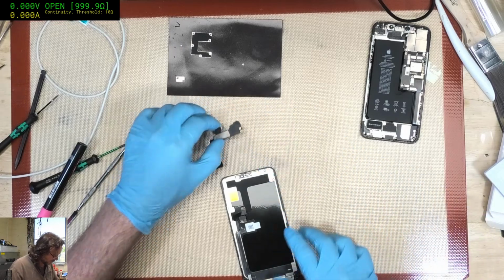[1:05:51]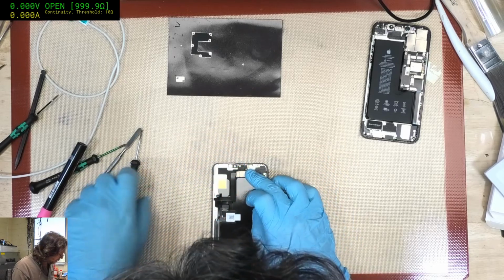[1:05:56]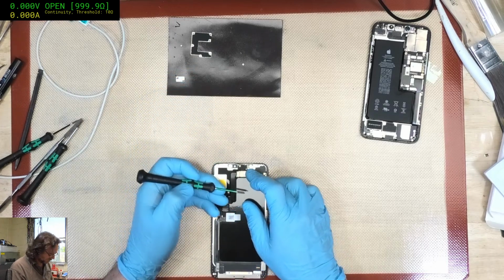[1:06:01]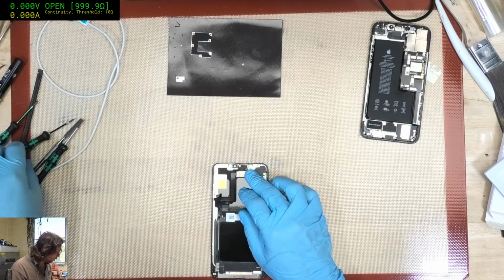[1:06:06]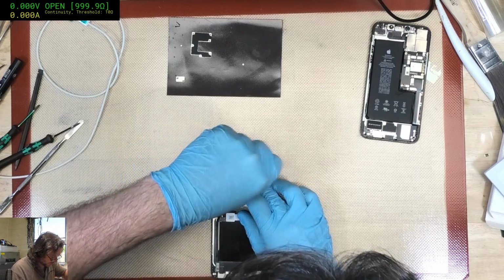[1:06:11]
Some people just get unlucky. Once they break their first screen, it just seems like they have a bad run for a couple of months. I've had people break the same screen 2 or 3 times in a week, and it's just like, I am feeling guilty taking this money from you, but I can't stop you breaking your screens. The biggest culprits are usually people who put the phones in their top pockets, like in their shirt pocket or something like that. It's like, that is not an appropriate place for it, nor is your back pocket.
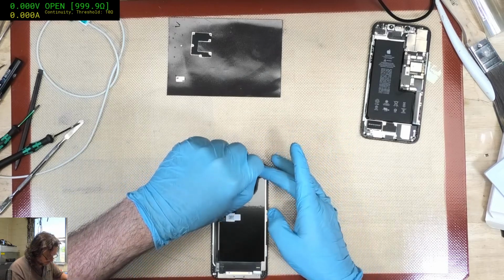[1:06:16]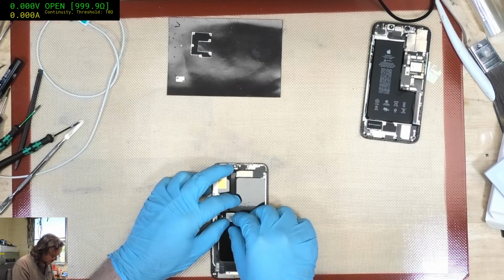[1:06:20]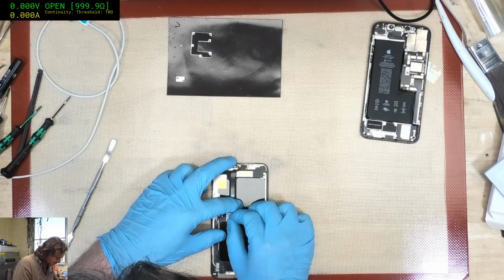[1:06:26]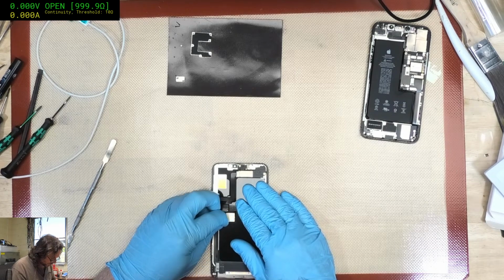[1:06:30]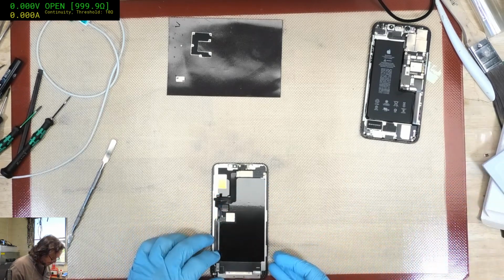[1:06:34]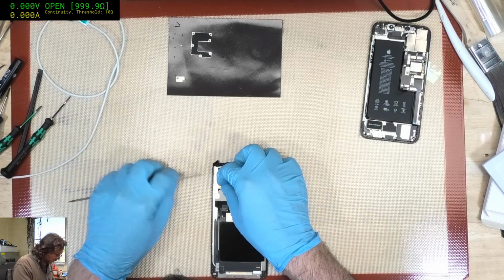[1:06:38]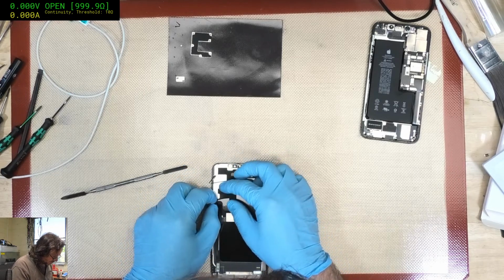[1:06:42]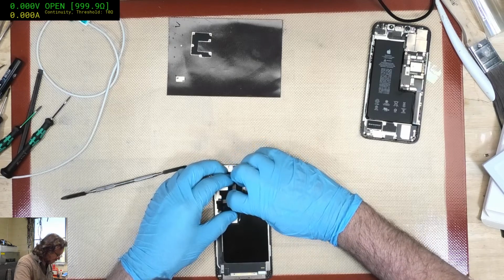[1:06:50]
But yeah, if I could find a manufacturer like JLC PCB or whatever, and if I could trust them not to substitute parts silently, then I would... I forgot to peel this off first. Oh well. Then it would be much easier for me. I'd much rather have someone else who's got all the factory setup and all that ready to go to do this sort of thing, because it's not really the kind of work I want to do.
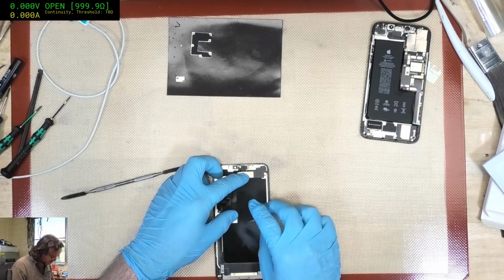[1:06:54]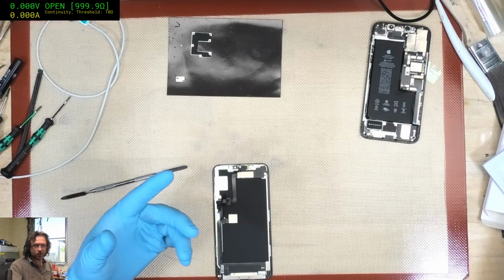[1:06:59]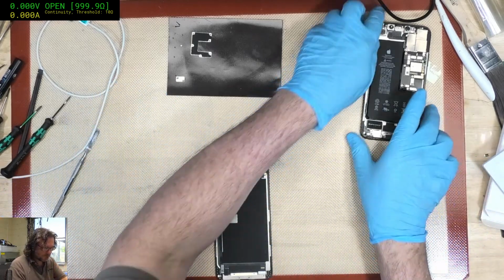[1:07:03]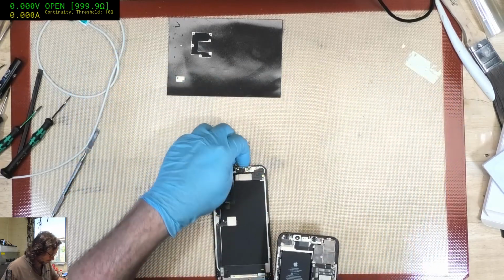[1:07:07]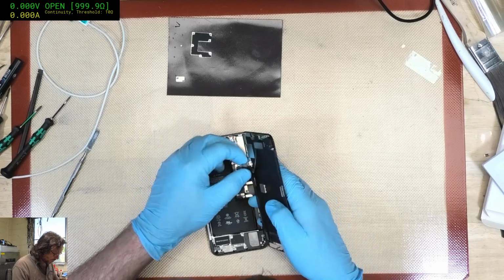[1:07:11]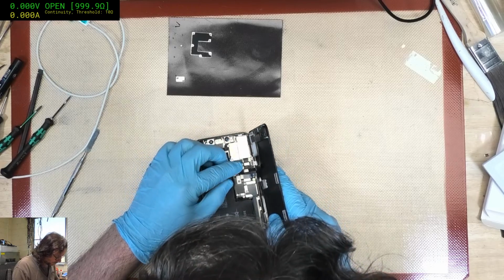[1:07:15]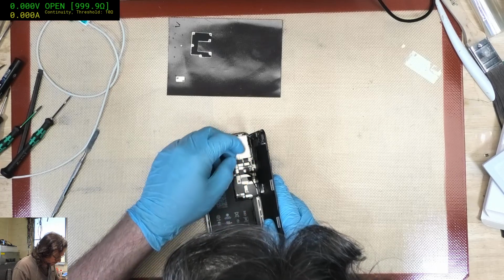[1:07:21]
And it pushes the price up. See if I can get someone else to do it, and it's like maybe they add $5 per unit to the bill of materials effectively for the labor, then that's great. I'm fine with that. But when I've got to do it, and if it takes me 10-20 minutes to do each one, that's gonna hurt. It sort of limits it very much to a boutique device then.
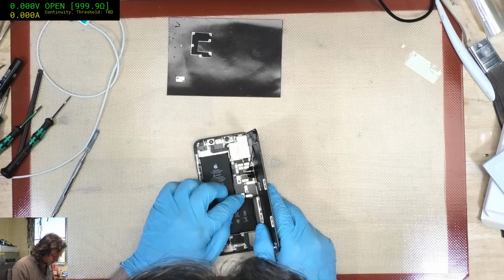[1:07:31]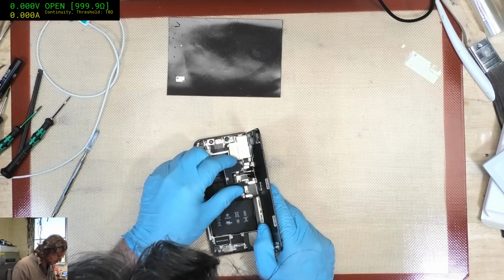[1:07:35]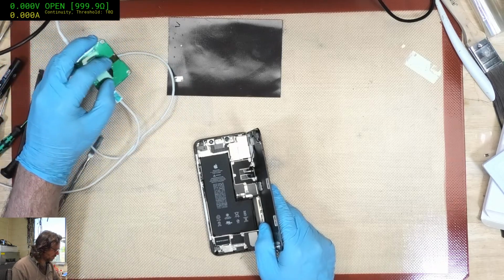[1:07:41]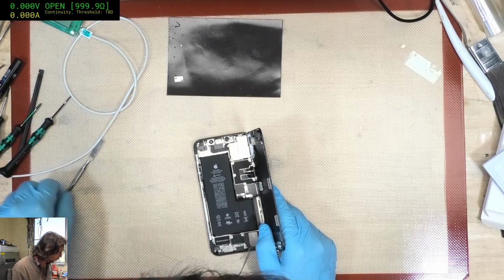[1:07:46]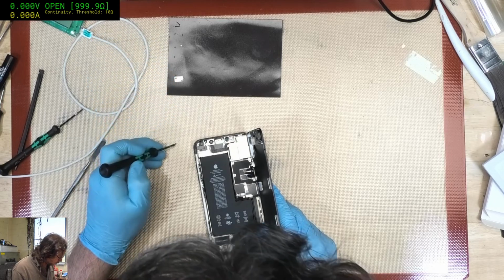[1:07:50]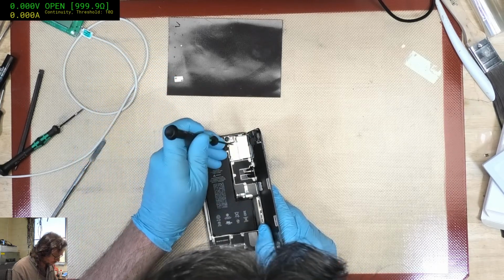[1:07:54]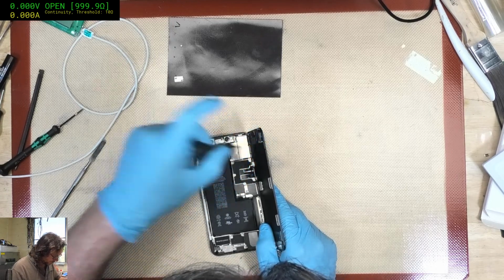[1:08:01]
And I can probably get the USB-C meters done, but I've got to work out what's going to go on with the LCD panels, because it seems like now that I finally want a couple of hundred of them, they're like, yeah, well, we don't have the non-backlight ones anymore. And I'm like, nah, damn you. How could you not have the same product after 12 years?
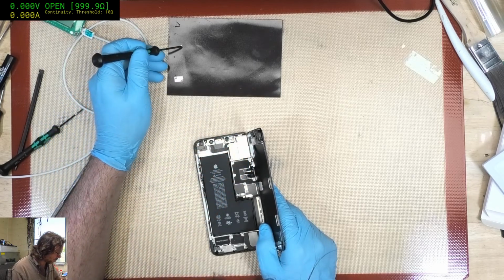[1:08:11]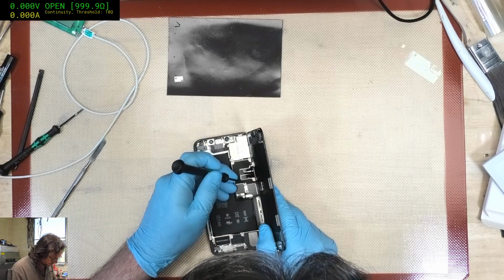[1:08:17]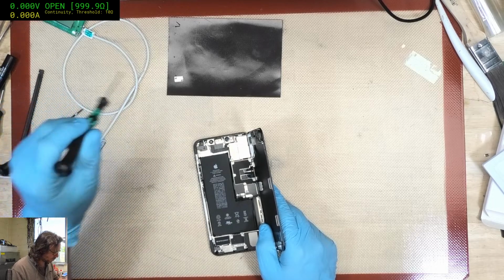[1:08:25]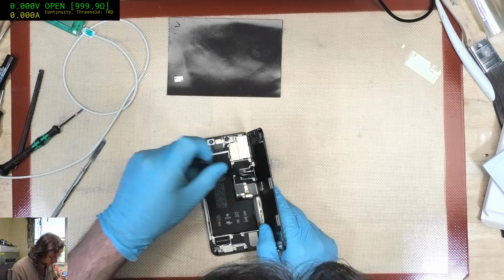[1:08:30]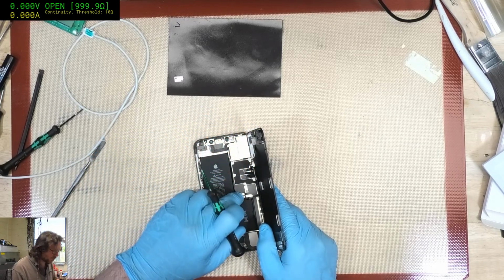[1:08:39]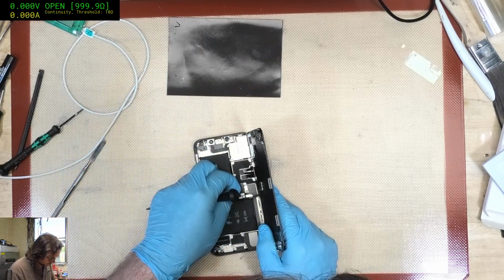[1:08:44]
They do have the same display, the primary display, the actual LCD portion, but they're all married with some sort of backlight, and I'm fairly sure that when they do that, the reflectivity of the original panel is slightly different, and so you don't quite get the dark contrast that you do. And of course, naturally, I haven't got any provision on those boards to drive a backlight. It would only just be a normal 200, 300 ohm resistor, things like that.
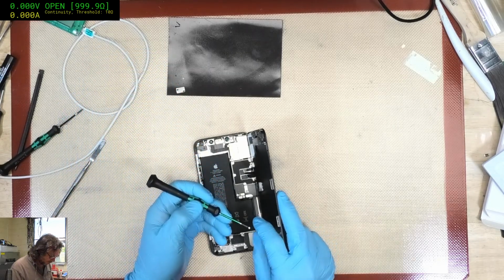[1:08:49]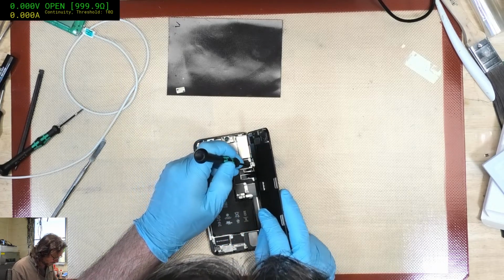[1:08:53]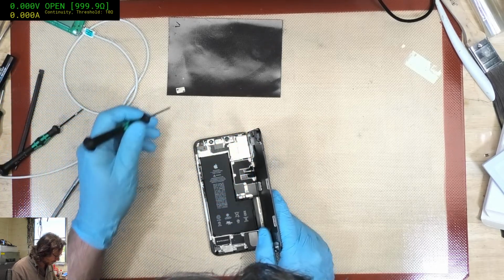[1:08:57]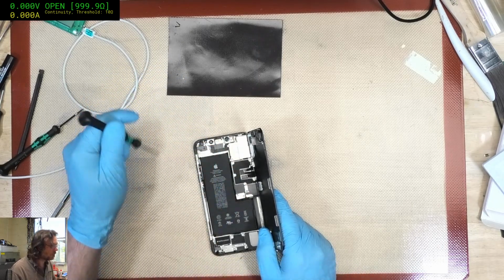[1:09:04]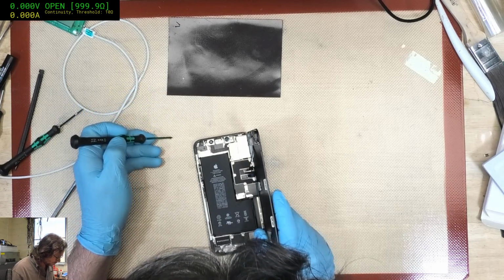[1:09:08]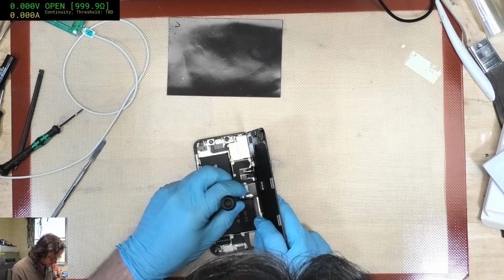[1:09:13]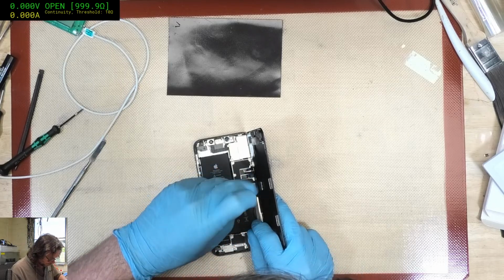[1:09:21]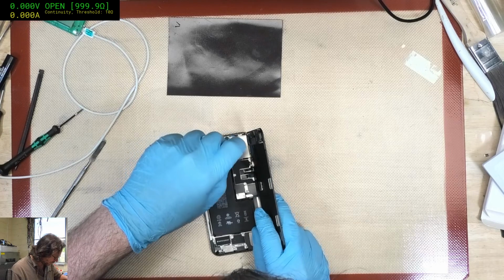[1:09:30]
But you then have to wire in that backlight, and that is not something I want to do, because it doesn't get fed via the FPC flex. It gets fed as 2 separate little wires on the back side of the LCD. If it was something that came through the FPC, it probably would be tolerable. But yeah, a separate wiring setup, it's like, yeah, no thanks. Worst case scenario, I might have to take a contrast hit and just clip the lines.
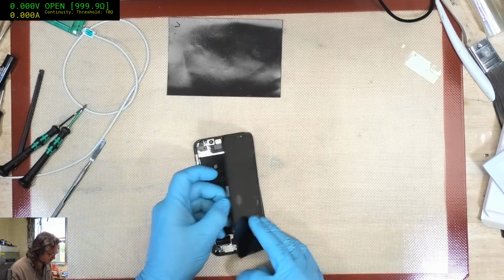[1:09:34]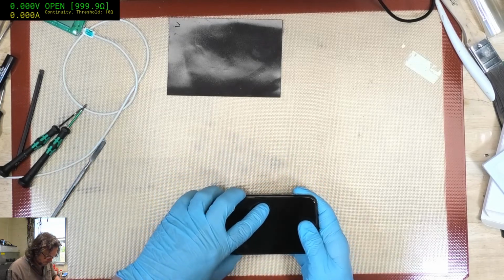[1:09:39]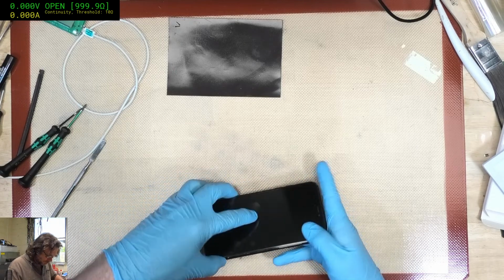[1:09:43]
Hey Jan Zimmy. Good, danke. Lots and lots of meow meows.
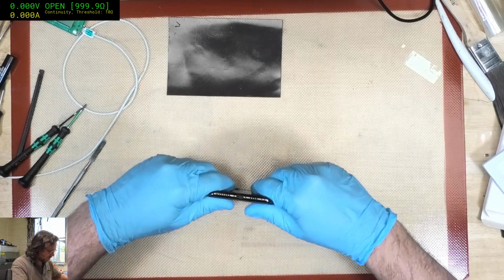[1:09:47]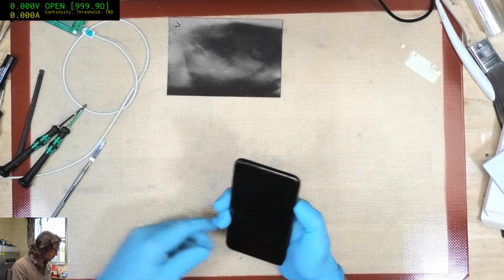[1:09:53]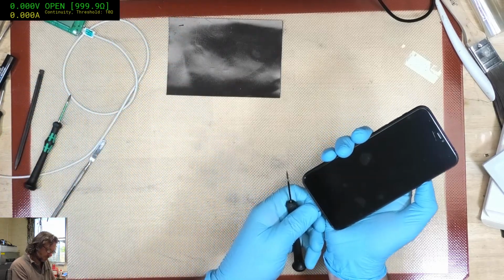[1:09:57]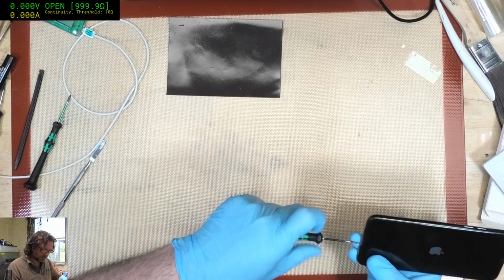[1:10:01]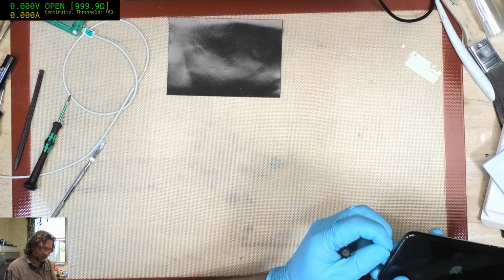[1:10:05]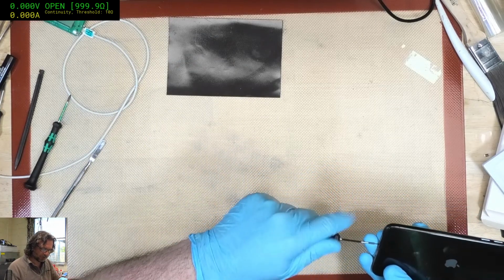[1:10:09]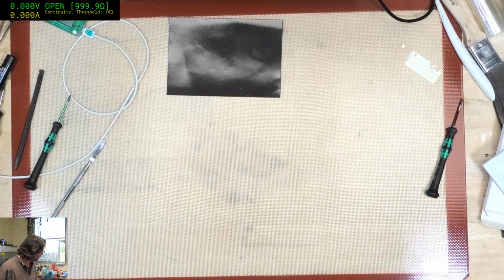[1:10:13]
Okay, Apple logo, it's a good start. But normally I would transfer the True Tone, but again, like I said, there is no True Tone data on that previous screen. And I just realised I completely forgot to write all the details on their screen. Oh well.
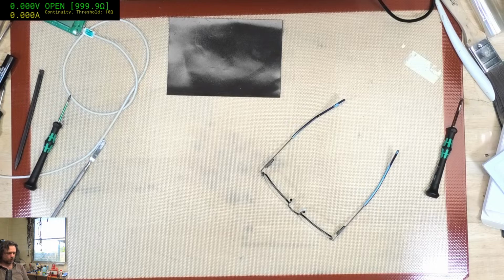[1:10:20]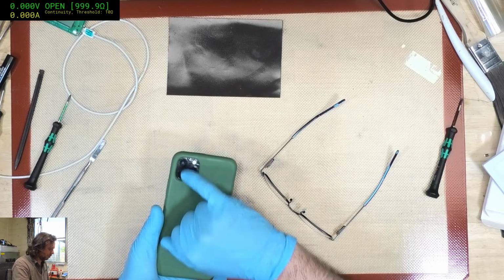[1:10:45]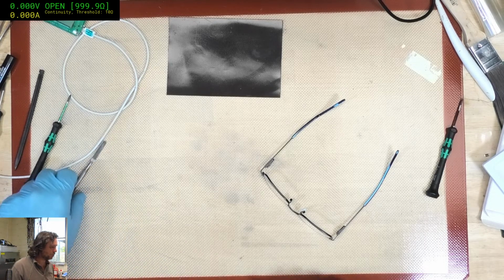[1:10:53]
Whoa, why are you saying hello? Oh, you were in the middle of an update when you got smashed. Oh, that's nasty. Just making sure all the facilities are working. Alright, that'll have to do. Seems to work. Man, the camera lenses all busted up and I don't have any spares of those. Not that I would probably replace it in a hurry, because doing nice things like that is precisely how you have things go wrong in life.
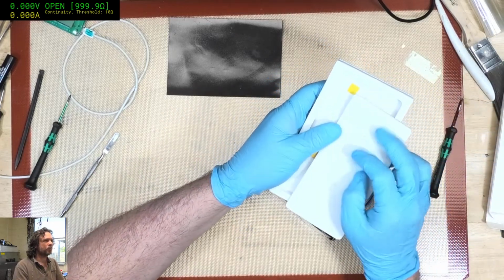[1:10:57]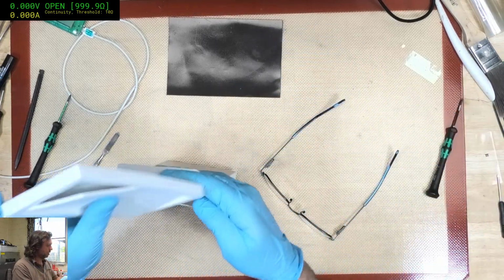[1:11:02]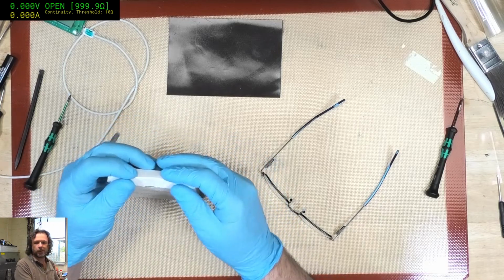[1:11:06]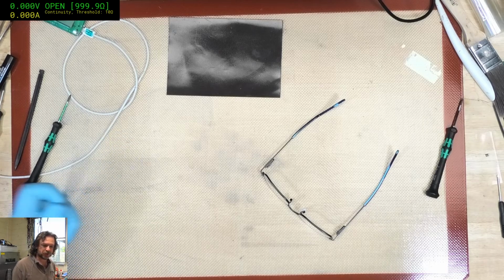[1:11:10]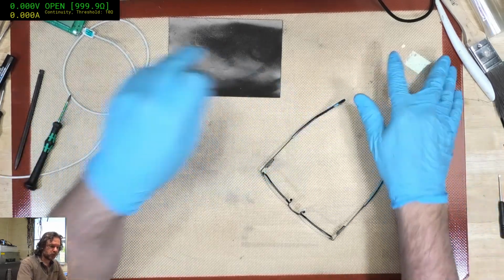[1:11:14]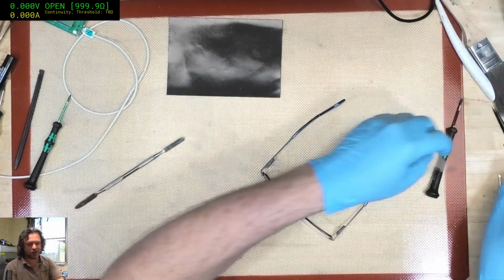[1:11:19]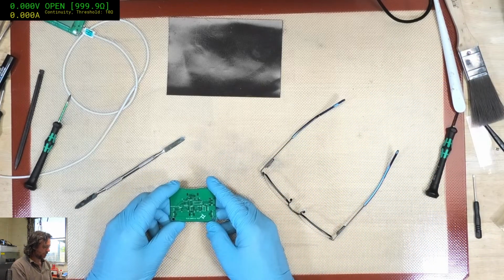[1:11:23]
Alright, okay, well that's it for today. That ring light is actually already attributed to someone, so I'll have to send that off and I'll just have to build a couple more. I'm hoping tomorrow that the proper USB-C boards arrive. I did get some this morning, but they are the ones that have the mistake on them. Not those ones. Where'd my mistake ones go?
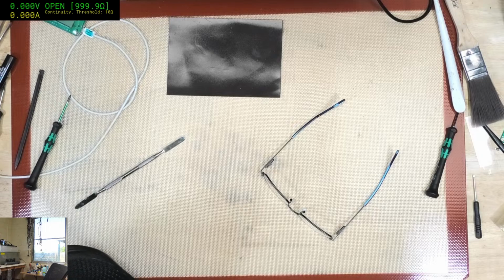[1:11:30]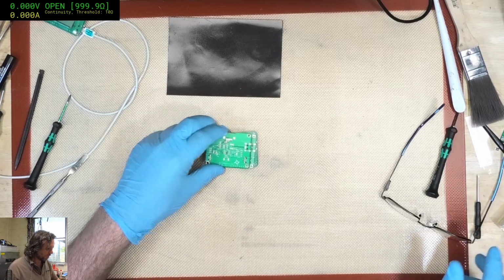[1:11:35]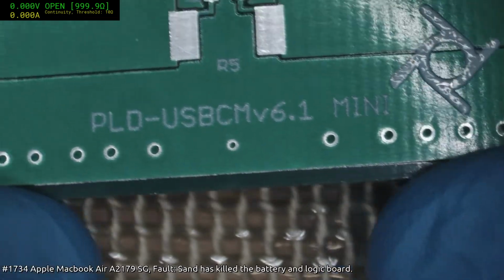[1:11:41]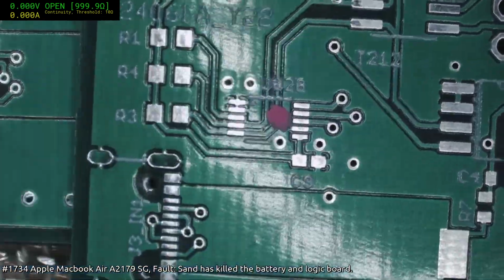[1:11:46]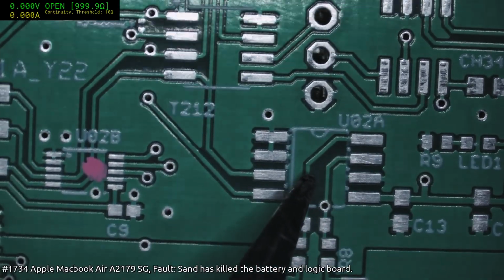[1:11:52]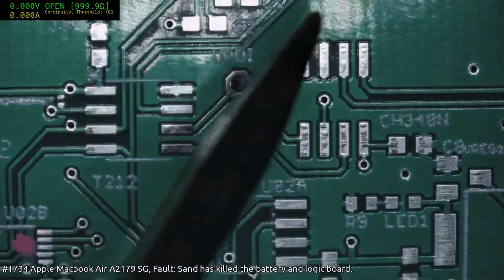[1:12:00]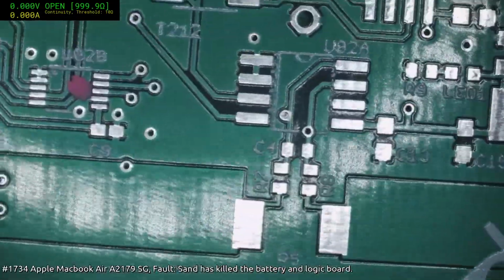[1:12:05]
Ah. Yeah, so these ones have the mistake on them with the I2C lines being swapped. Look at that, nice. So hence I've got the pink mark of death on it. And also, see, I've still got the INA 219 on it. But now that I have a good supply of 237s, I've eliminated that, moved that to there, swapped the lines so they actually are correct. But you can see it has the 340 footprint there and the 2 regulators. But yeah, so it's a bit unfortunate.
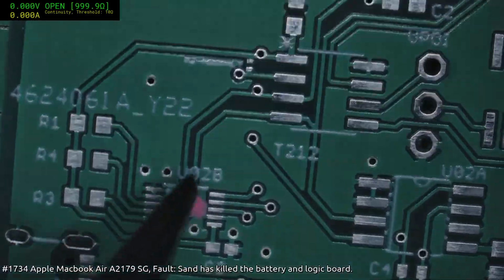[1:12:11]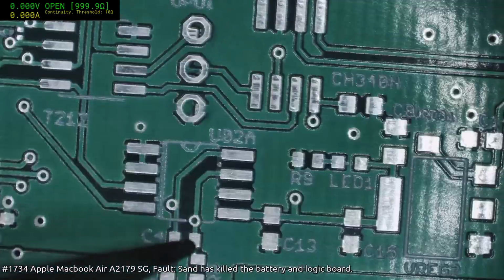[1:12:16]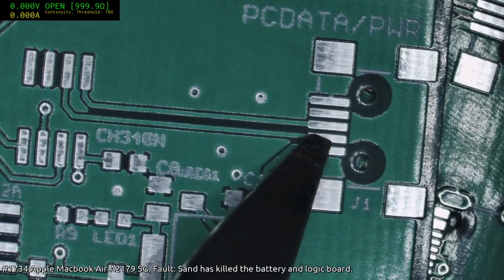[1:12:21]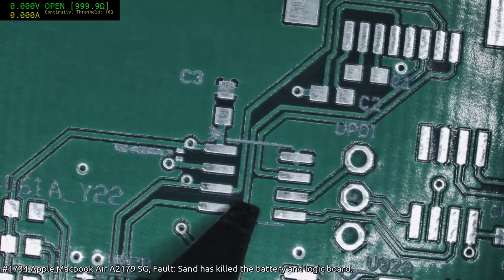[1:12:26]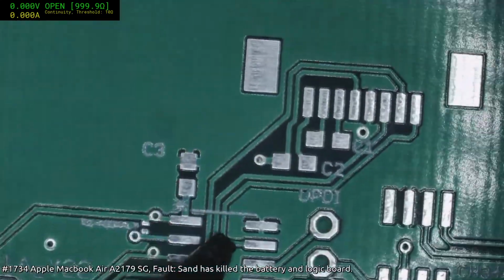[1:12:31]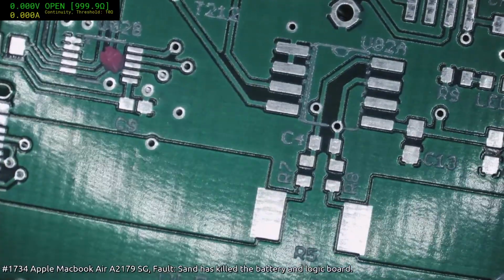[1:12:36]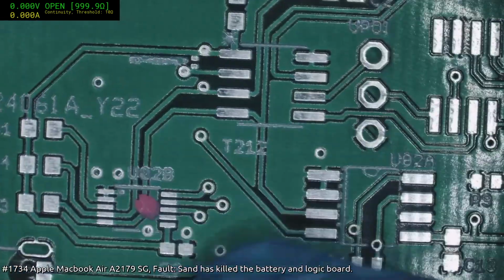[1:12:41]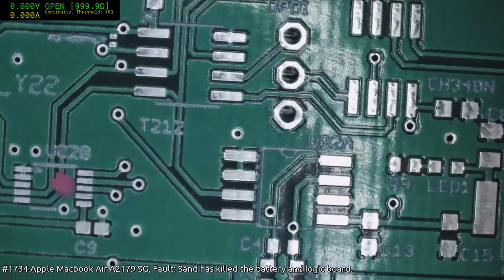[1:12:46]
I do keep the boards, because if you ignore that part of it, then you've still got a board that can be useful for a number of things, because you've got a regulator, you've got a USB-C, USB mini interface via serial, and you can put a controller or anything like 212, 812, whatever, and then you've got access to I2C lines. So it's a useful board for future prototyping. So that's why I don't generally throw a lot of my boards out, but I do mark them to let me know that, hey, don't use this for an actual production.
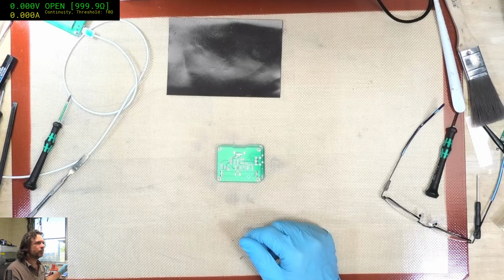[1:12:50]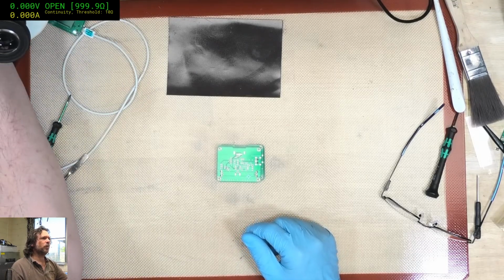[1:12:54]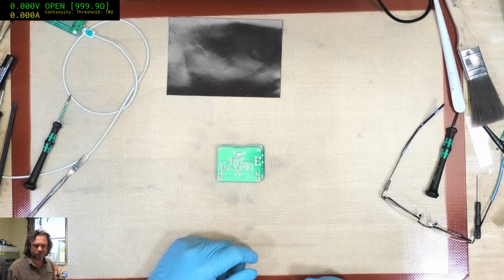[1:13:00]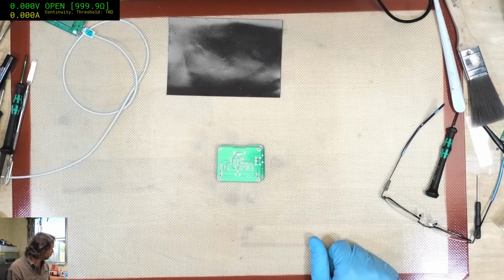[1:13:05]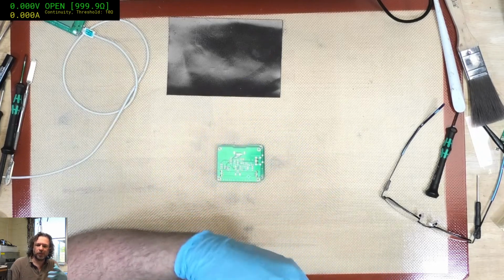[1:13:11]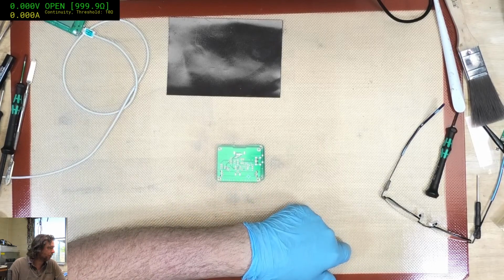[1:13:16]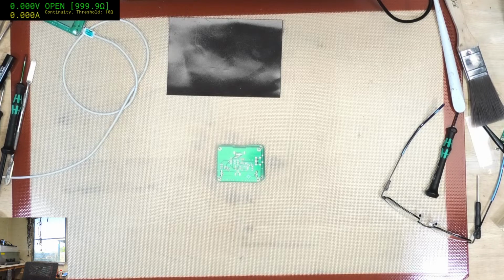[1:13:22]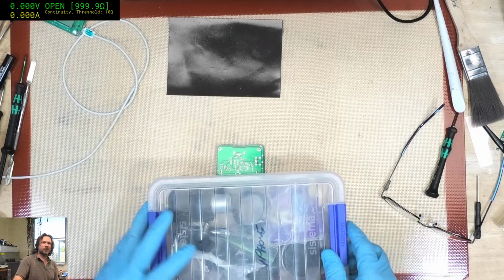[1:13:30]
I have protectors on my camera lenses. Yes. Well, you mean just like UV filter lenses from Hoya, or whatever the brand is. But yeah, I always have those. Like, if you have a microscope and you are not using a Barlow, still go and put one of those 48mm or whatever protector lenses on it. You will regret it if you do not, because you'll end up with flux and splatter, all sorts of stuff on the underside of your objectives, and trying to clean that is not fun at all. Definitely something you'll regret.
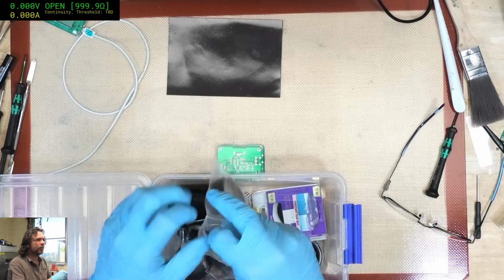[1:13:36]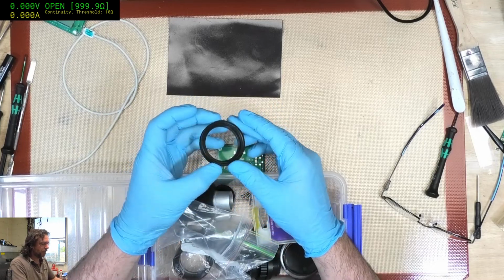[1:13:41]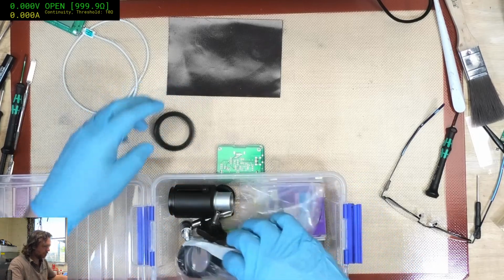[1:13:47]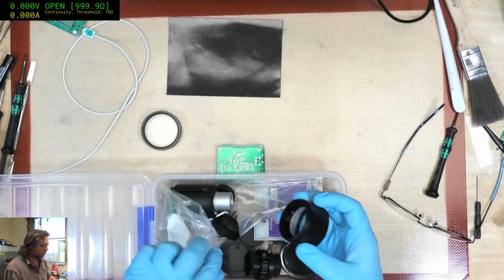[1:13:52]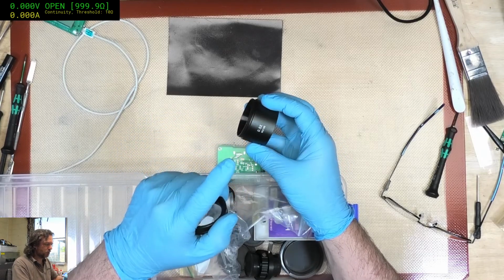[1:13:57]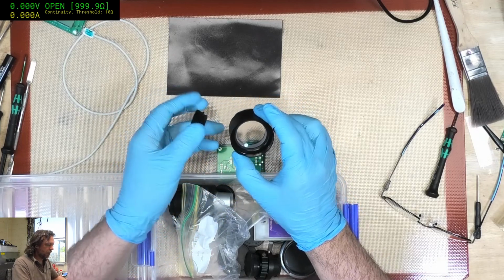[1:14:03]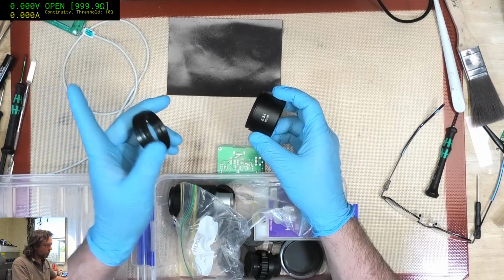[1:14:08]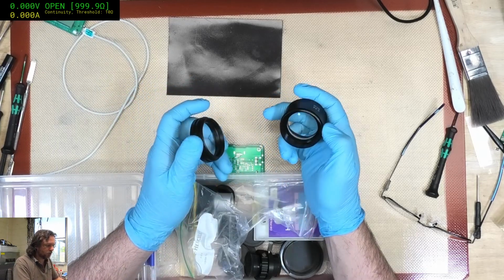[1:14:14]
Oh, on the iPhone. Oh, right. Okay. But yeah, this here, instead of a Barlow, I know we've diverted, Jim, from what you're saying. So these are all just the random bits and pieces of crap that didn't work out when I was trying to work out what microscope setup I had. So this here is a 0.5 Barlow, which was all that we really had access to initially when everyone started jumping on to repairing things. And I was never happy with the 0.5. I bought it just to see what it was like, but the 0.7 is the one that I was looking for. I was actually after a 0.65, but 0.7 they came out with, so I was like, okay, I'm happy with that.
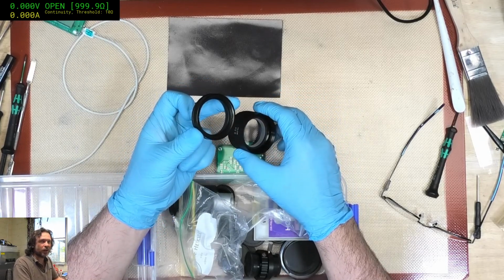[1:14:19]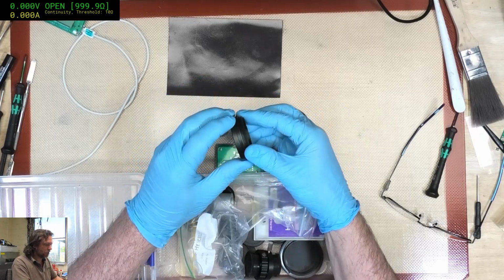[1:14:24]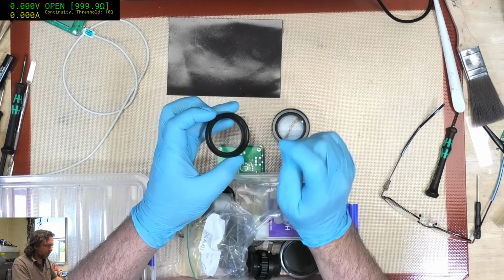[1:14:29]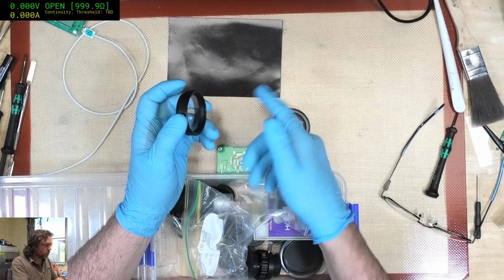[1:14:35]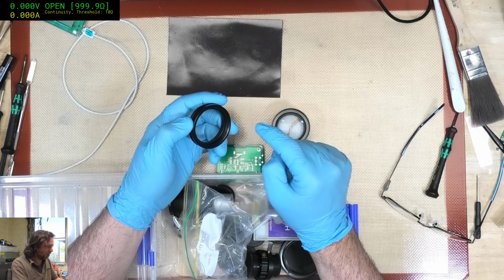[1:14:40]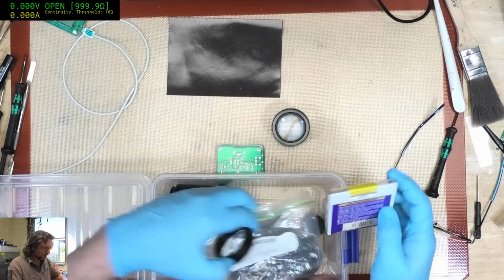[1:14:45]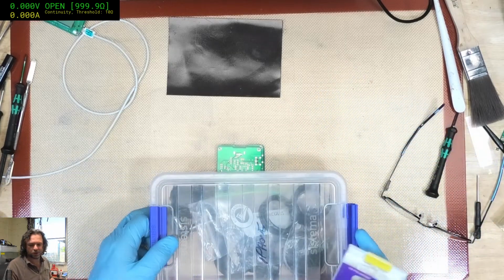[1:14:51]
But this here is effectively a 1x Barlow, and all it is just a simple filter, piece of glass, no magnification or reduction, but it protects the objective lenses on your microscope on the underside, because when you're soldering and things like that, you know, things do flick up, and it's much easier to clean one of these than it is to disassemble your microscope and clean those objectives. I've got my circular polarizer here. I should see what it's like under the microscope light. I suspect it's going to be quite dim.
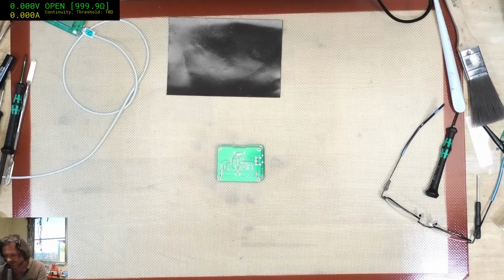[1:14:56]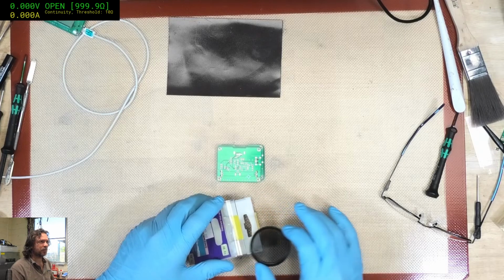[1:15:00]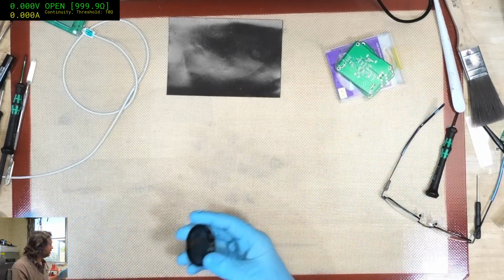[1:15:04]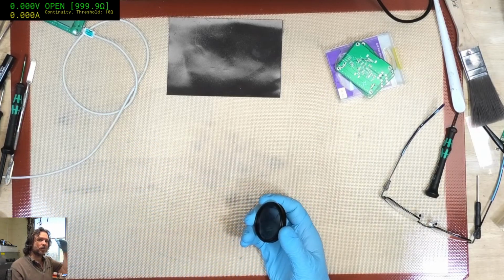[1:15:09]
Height is better with a 0.7, yes. But it's the trade-off you have. So obviously the 0.5, funnily enough, I hated the 0.5 because it required you to be just too high. It's like you needed a giraffe neck.
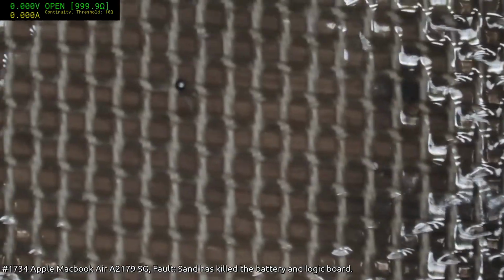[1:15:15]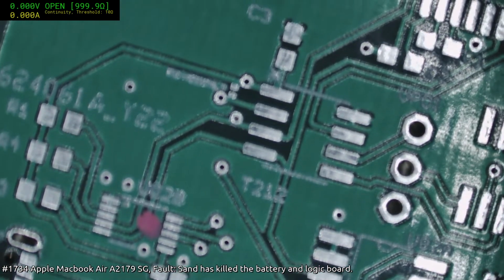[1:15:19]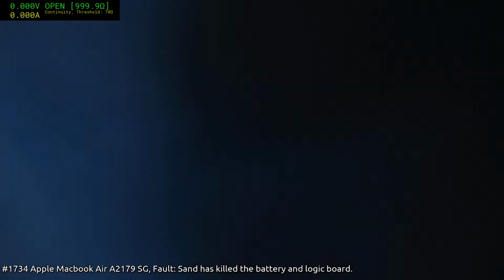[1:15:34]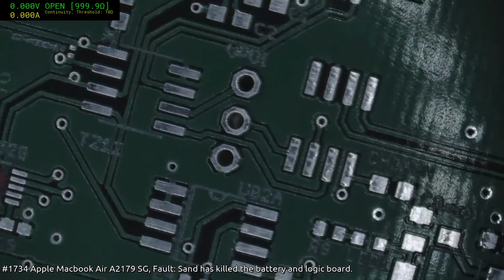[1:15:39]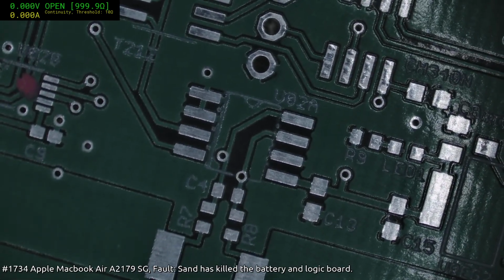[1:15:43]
Okay, so this is no polarizer on it. And okay, I haven't cleaned this polarizer, so it's a bit iffy, but you know. Okay, and that's with the polarizer. And as you can see, immediately it's quite dim. It's pleasant. It's like being in a nice shady tree or something like that.
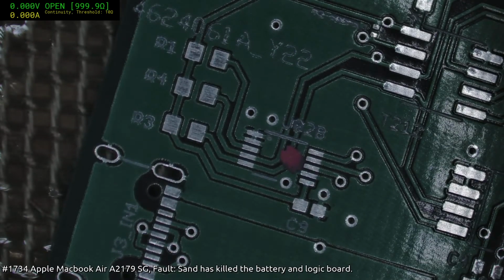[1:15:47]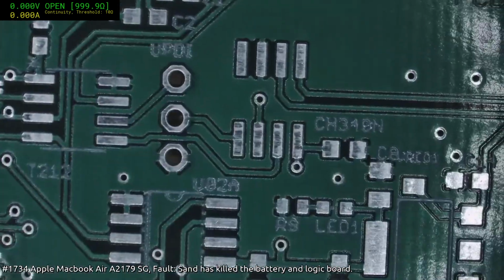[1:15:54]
I'll bring the brightness up to the maximum I can. Okay, so that's maximum. I don't know, you tell me. Does that seem just a little bit too dark? I feel like it is. I could bring the HDR up on the camera.
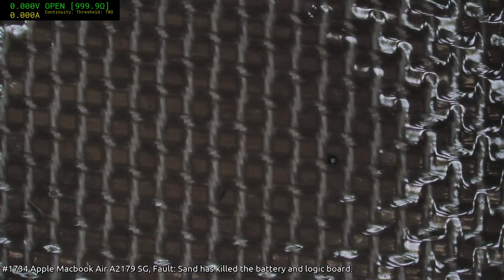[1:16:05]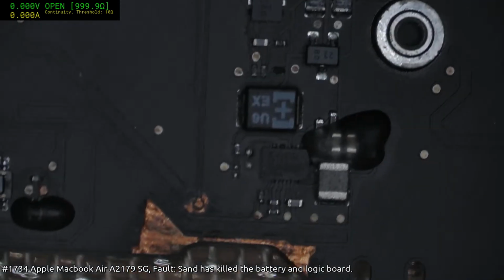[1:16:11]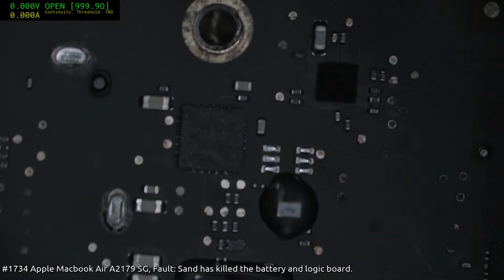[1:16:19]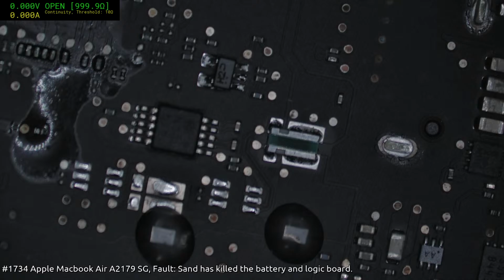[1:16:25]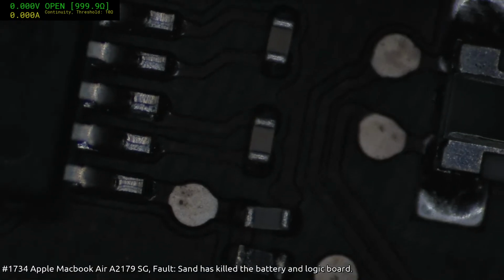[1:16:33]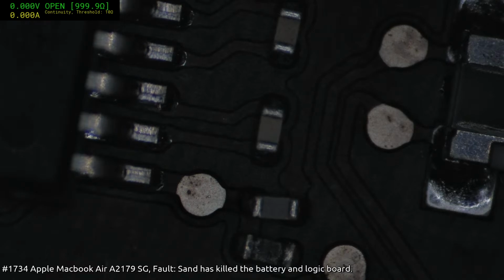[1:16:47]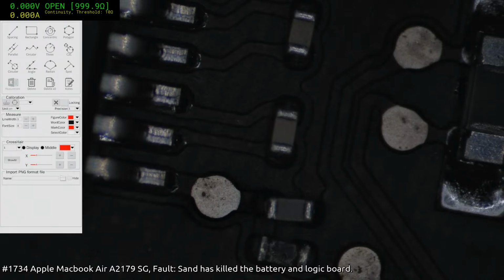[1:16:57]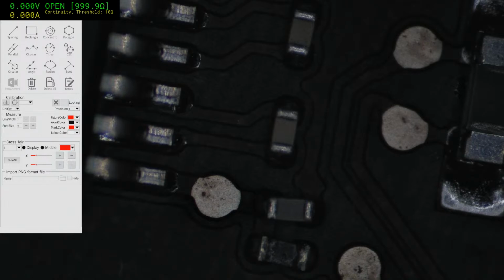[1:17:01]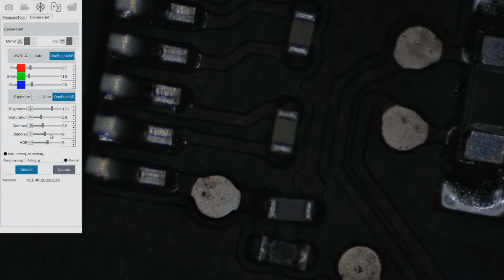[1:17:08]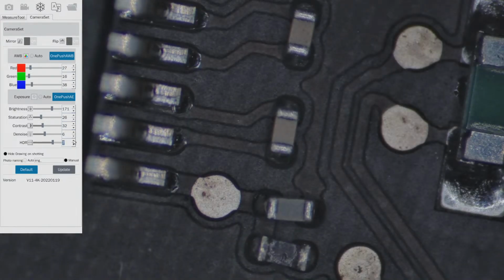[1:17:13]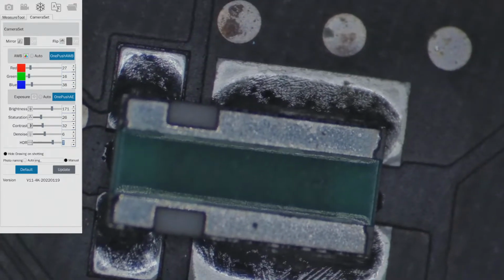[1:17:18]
I'll just get the microscope camera thingy. Just give me a second. So what's that? Level 7. Starting to really push it a bit.
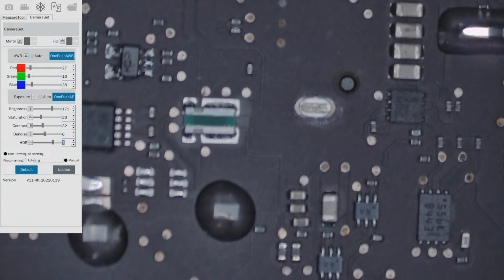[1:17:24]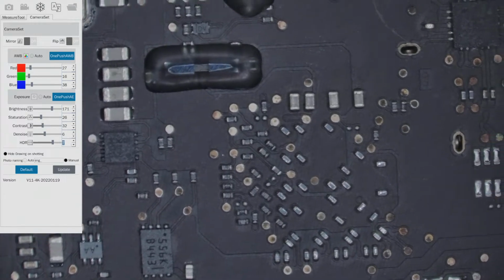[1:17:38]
Is there a trademark issue if you call your ring light Ringo? I don't know, but I probably wouldn't call it that anyway.
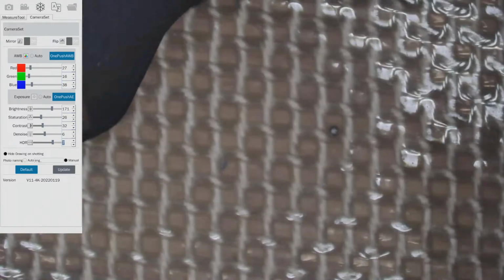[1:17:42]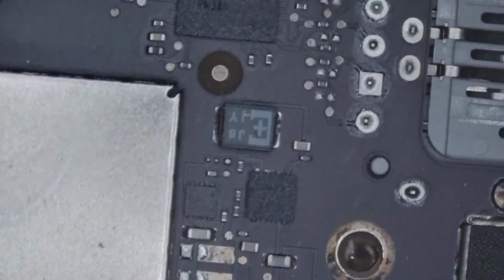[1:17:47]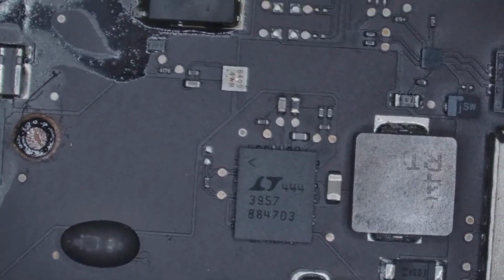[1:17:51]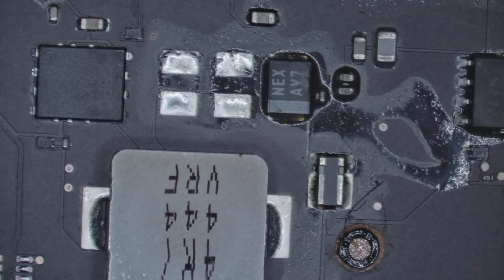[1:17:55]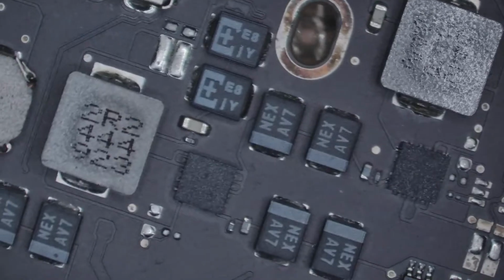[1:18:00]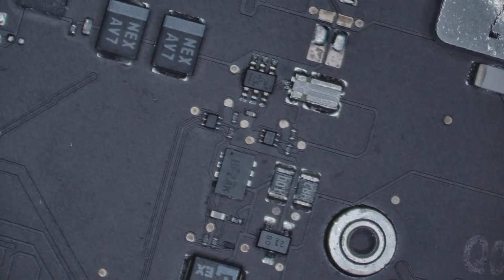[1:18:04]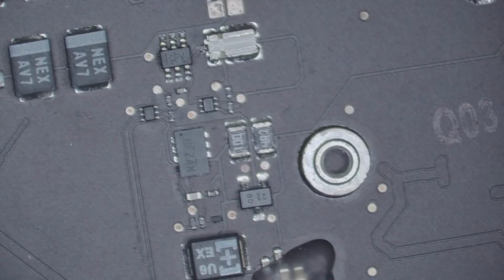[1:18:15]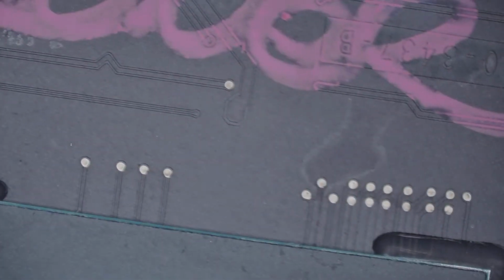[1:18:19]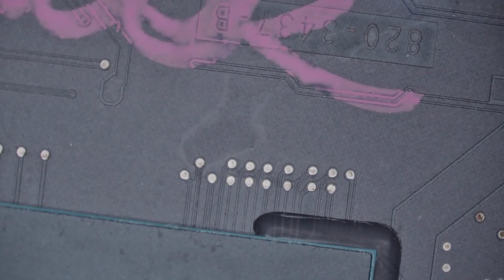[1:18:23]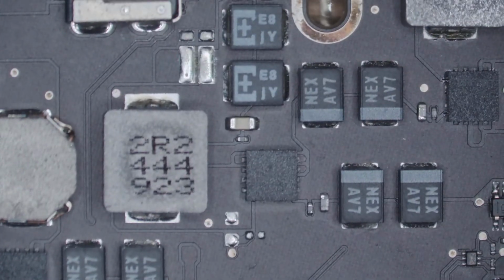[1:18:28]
Yeah, I think if I had one of those halogen ring lights, laser fiber optic halogen ring lights, it might be okay. Or if I increase the number of LEDs on this one. But as it currently stands, it's feeling a bit, it's just a little bit too anemic. So we'll take the thingy off, and I'll have to adjust the HDR back down after this. Okay. It doesn't help that these boards don't have a lot of color, so yeah, that's a little bit too pushed.
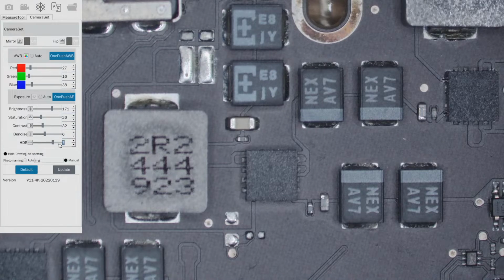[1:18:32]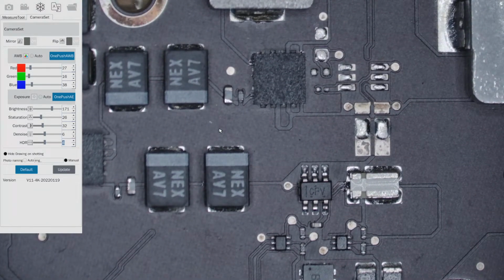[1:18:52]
That there is, mind you, my monitor's not that great, but somewhere between 4 and 5 is about appropriate. That's not at full brightness. If I go full brightness, there we go, that's full brightness.
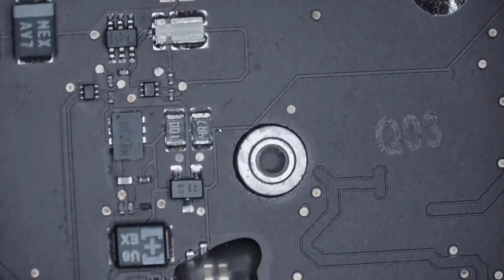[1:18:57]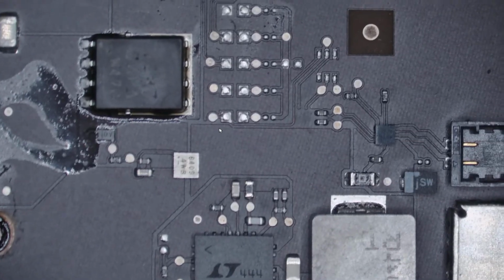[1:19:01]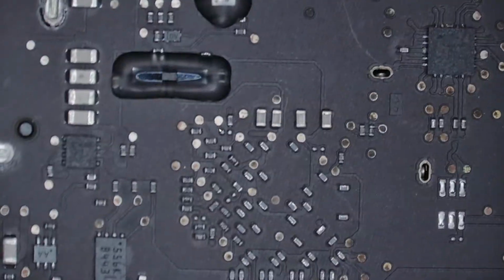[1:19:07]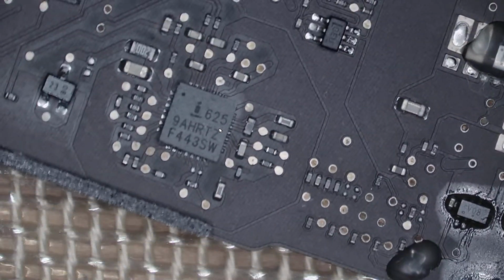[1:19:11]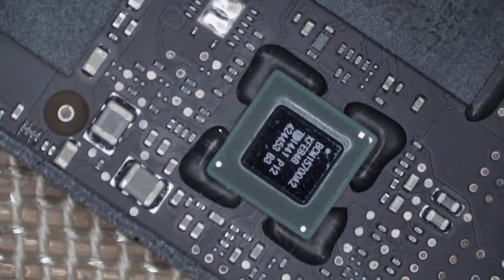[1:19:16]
Yeah, I haven't got a name for it. I probably won't have a name for it. I'll just call it the PLD ring light. I suppose we can't call it the rooster ring light because people will probably rename that to something else.
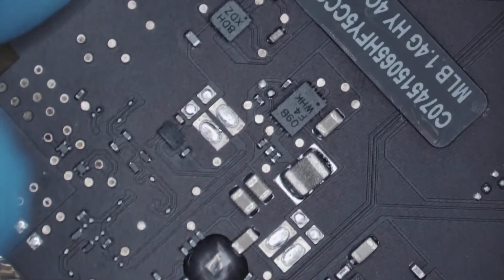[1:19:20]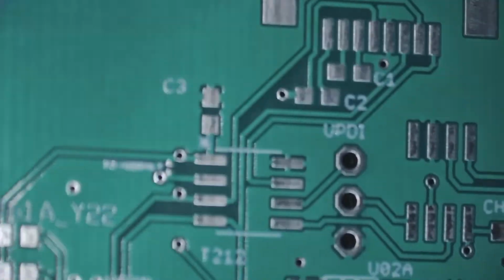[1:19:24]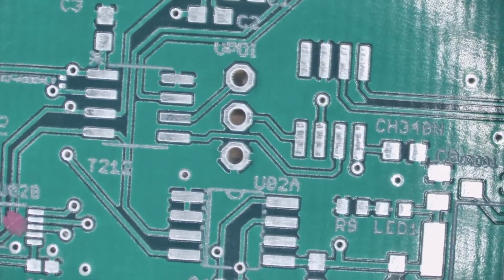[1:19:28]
But yeah, if you're doing MacBook work, the 0.7 Barlow is pretty much your best combination. It's a little bright. That's about right according to my screen.
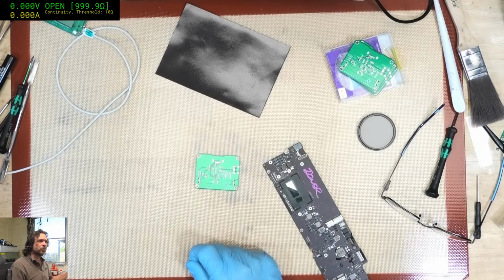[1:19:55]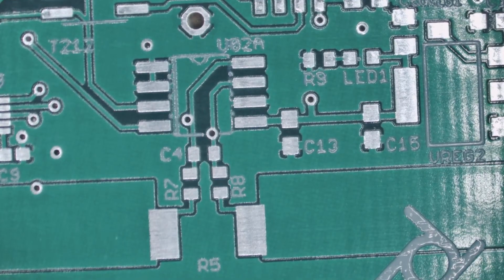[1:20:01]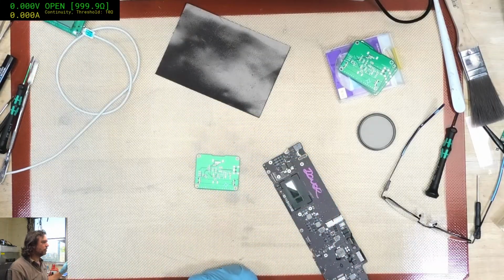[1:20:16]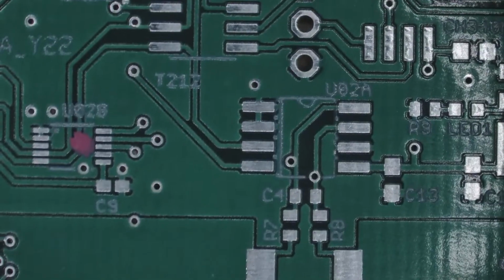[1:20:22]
Yeah. The nice thing about this ring light too, it will remember that setting. So, well, hopefully it will. We'll just check it. Okay, so it's been more than a second or so that it's had that fixed brightness. We'll swing it away, it switches off. Swing it back in, switches on, and that looks about the same to me. Easy way to prove it is just go for the really dim, like that. And that should have about a second or so, and that's good to go. Off. Bring it back. Yep, equally as dim. So yeah, it's remembering what I leave it at.
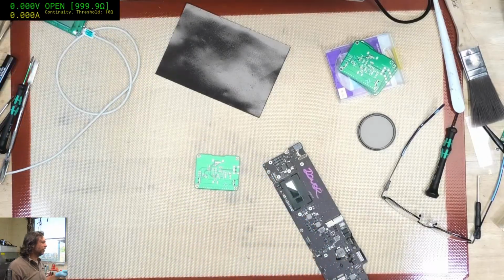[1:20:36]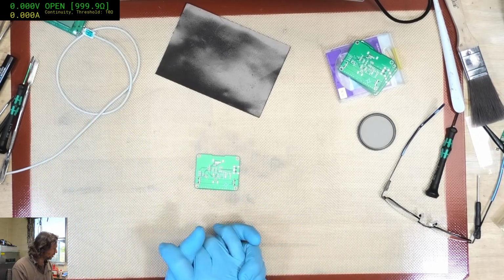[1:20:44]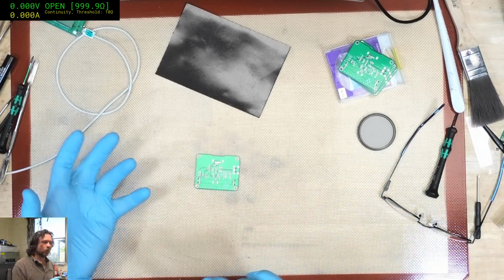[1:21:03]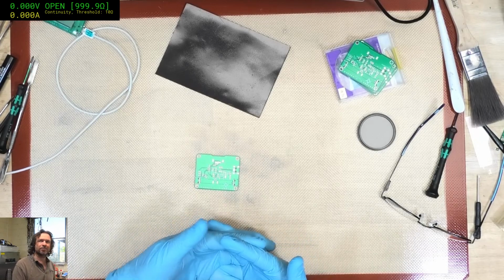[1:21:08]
Was it Ringo Starr? Oh, now I get you, the damn Beatles reference. Gee. Alright, this time I'm actually now going to go. Got to get some other stuff done. Thank you all for watching, and I will now go and make another order for, I don't know, maybe 50 or 100 of those aluminium boards. And I'll get a stencil done too. At least if I get a stencil done, it makes it within the range of me being able to sort of do them myself. I still wouldn't want to do more than a batch of 10 at a time, maybe once a week, at the very most. But we'll see how we go.
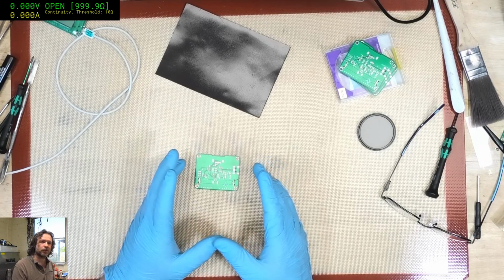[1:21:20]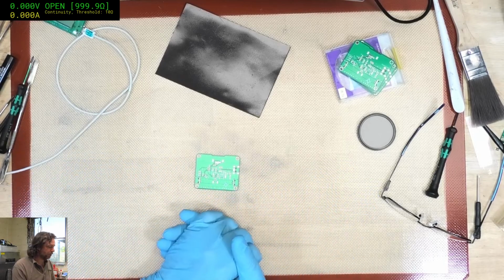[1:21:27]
Like I said, if anyone does know a reputable board manufacturer whom I can trust to use the correct LEDs, let me know in your email or in the comments below, and maybe we can actually turn this into something a little more than just a little hobby project.
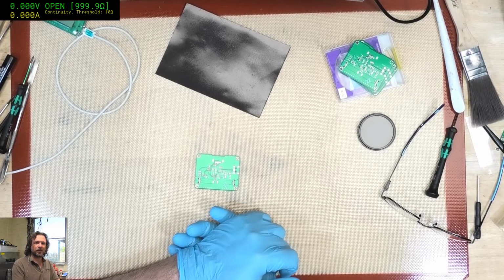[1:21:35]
Wrong mouse.